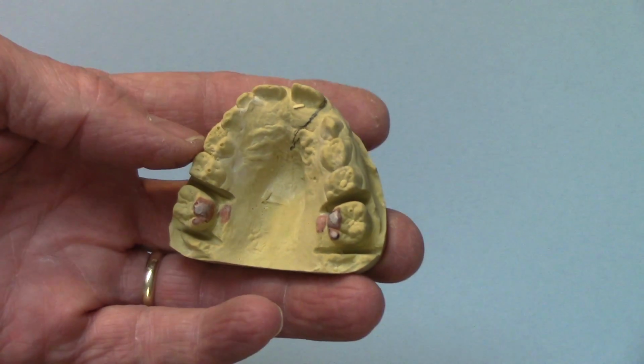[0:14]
Hi, I'm Jay Tyler. In this video, I'm going to show you what we did to eliminate spring breakage.
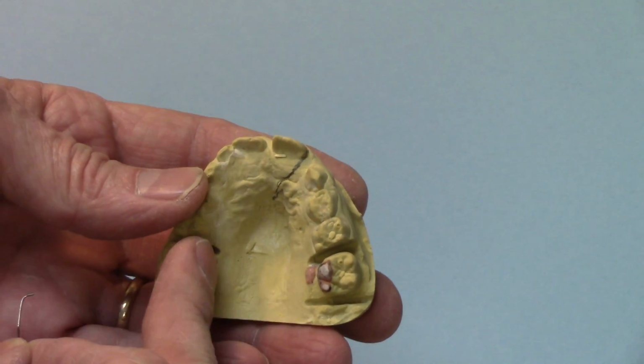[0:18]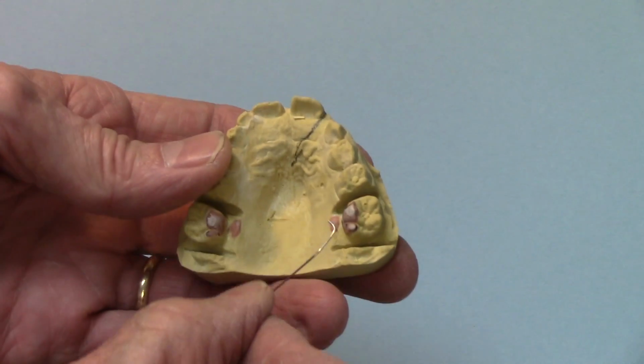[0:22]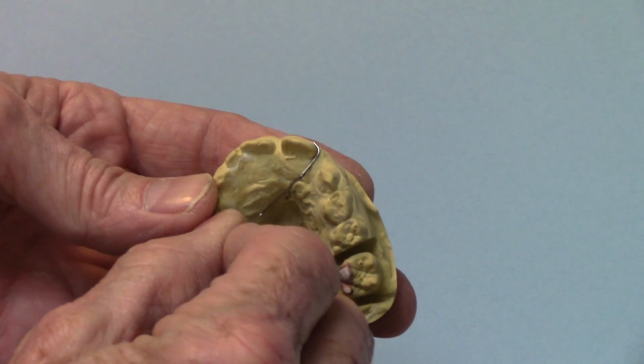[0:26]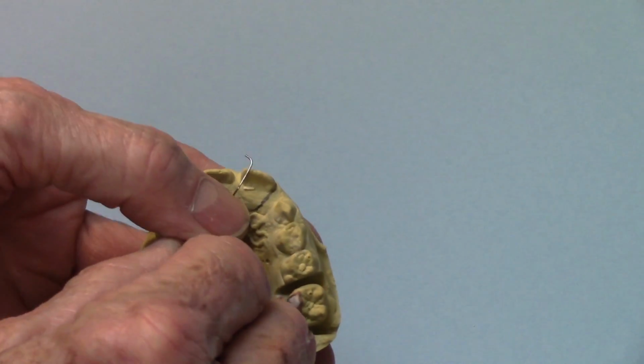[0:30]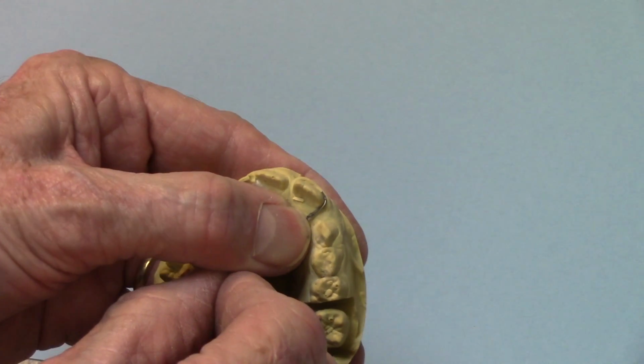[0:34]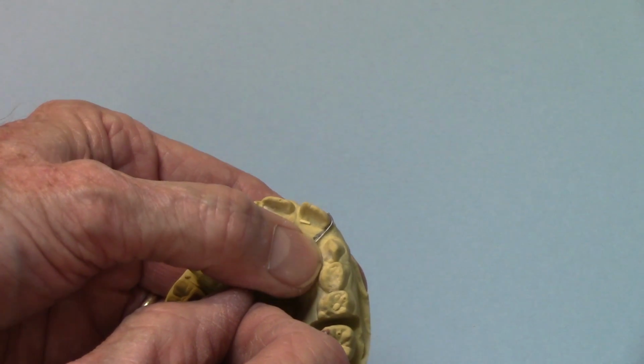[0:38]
Here's a model that's going to have an appliance with a spring to kick that central over more toward the midline. Now here's one version of a spring design. It's just simply a wire. This is an 0.020 wire, wraps around the distal aspect. And it would be waxed up to about right here, so that would be the working part of it. The rest of it would either be in acrylic or soldered to a fixed appliance.
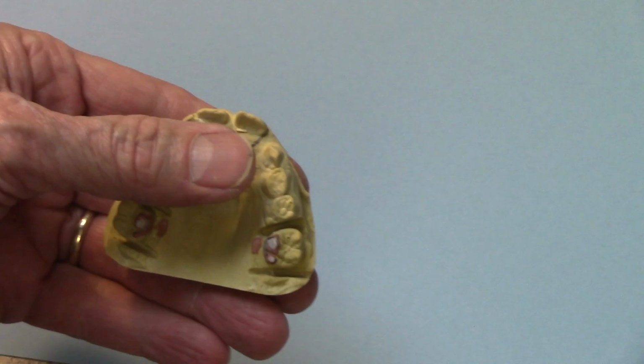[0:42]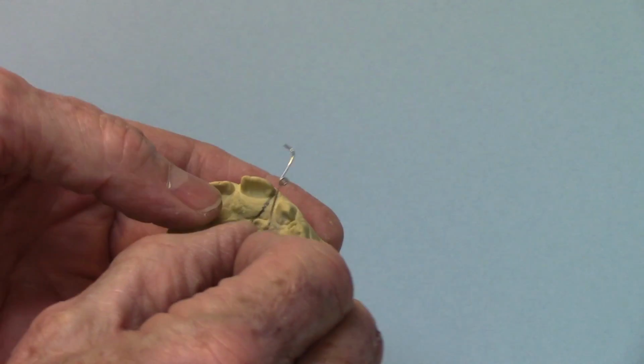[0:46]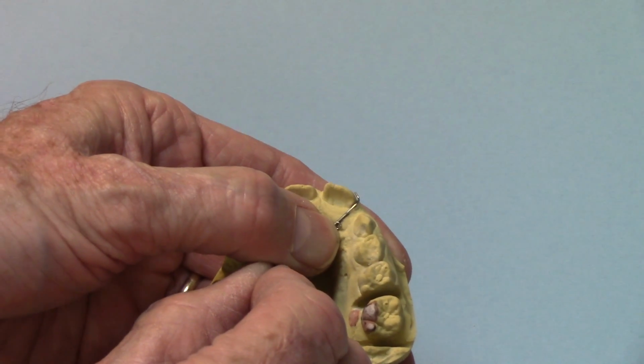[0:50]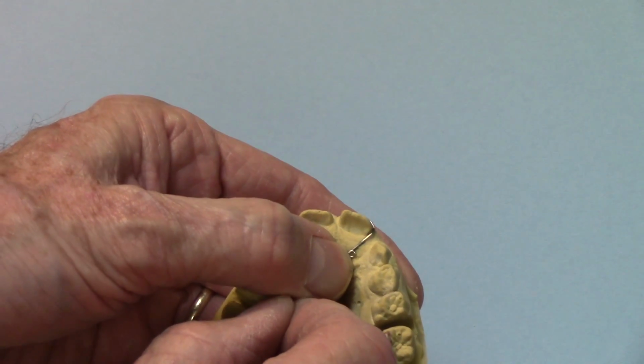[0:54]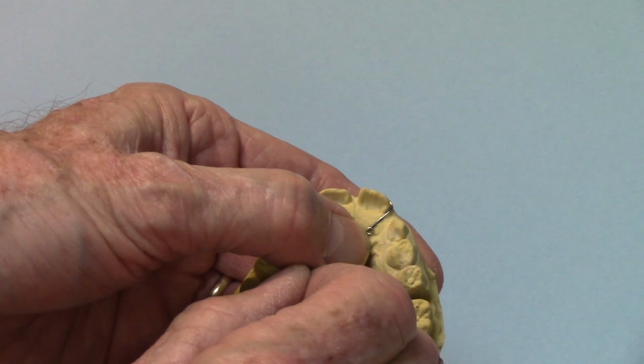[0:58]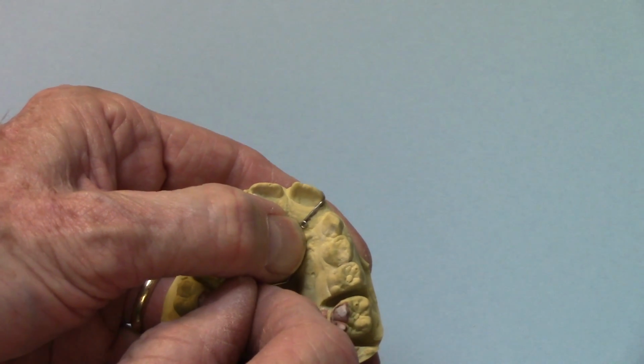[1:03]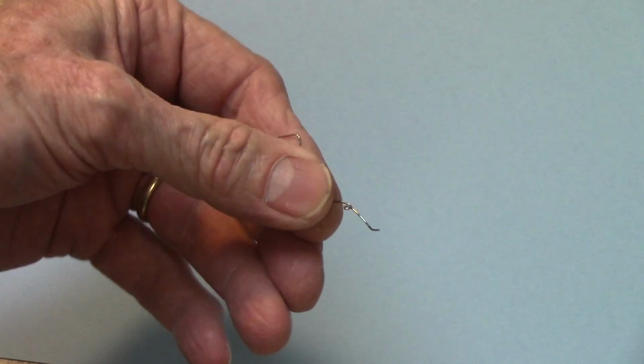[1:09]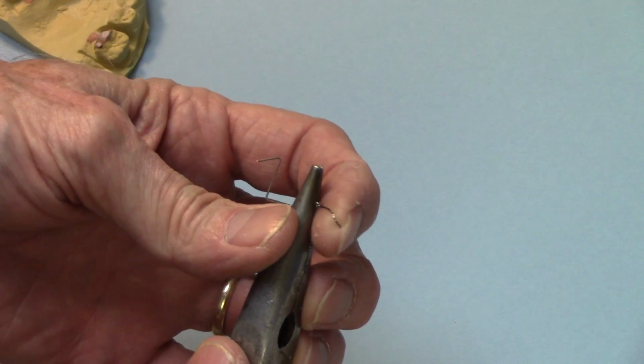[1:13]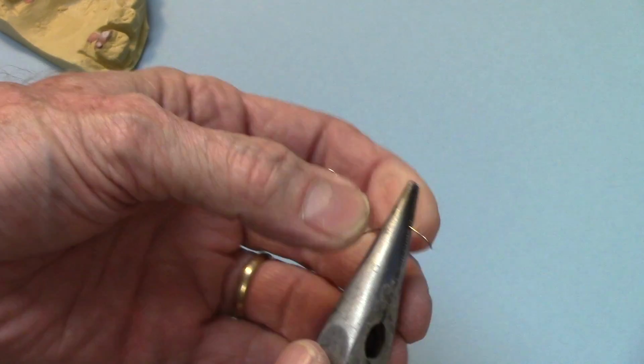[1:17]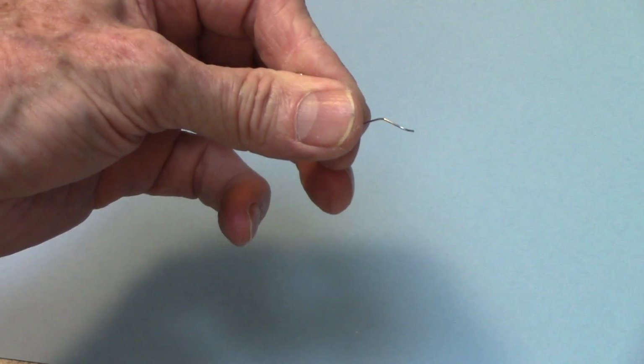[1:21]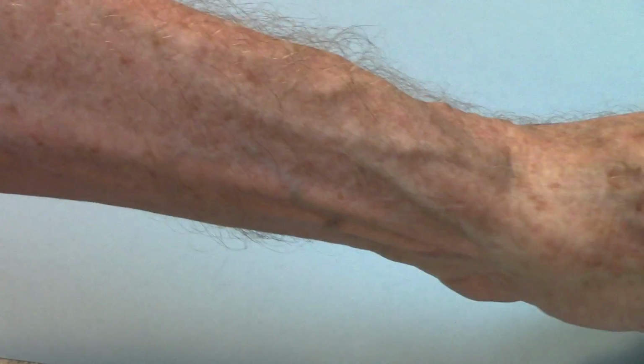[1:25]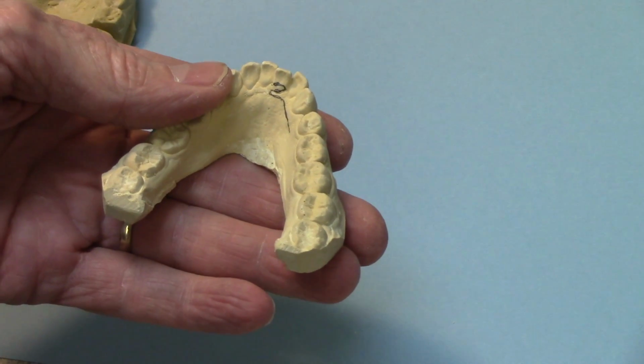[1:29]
But now, if we have a helix on it, we have the same design, and we would either put it into acrylic right past the helix and wax the helix and the active part of the spring, or put the heat protective compound on there and solder it from the helix back, and we would have a single helix spring, and it's got more resiliency. You can grab it with a plier, and you can just see it's got a lot of spring to it. Well, this spring has a lot of spring to it as well, but these springs break. These springs don't.
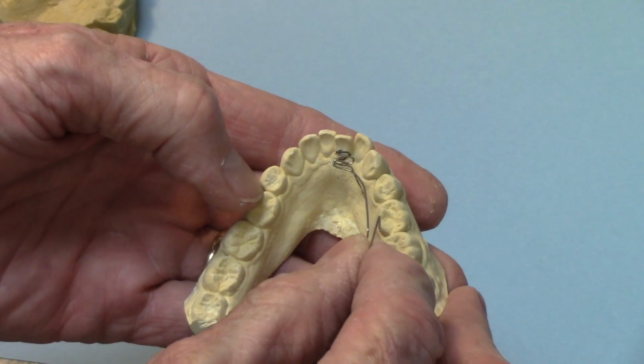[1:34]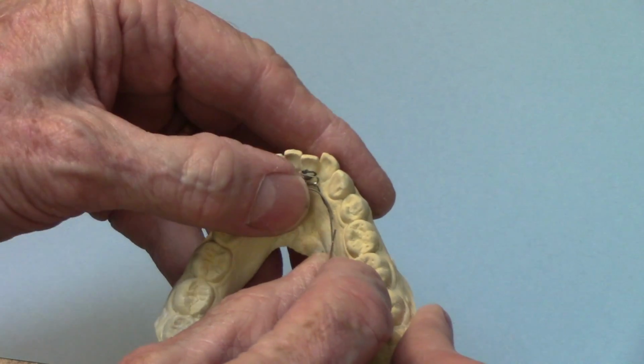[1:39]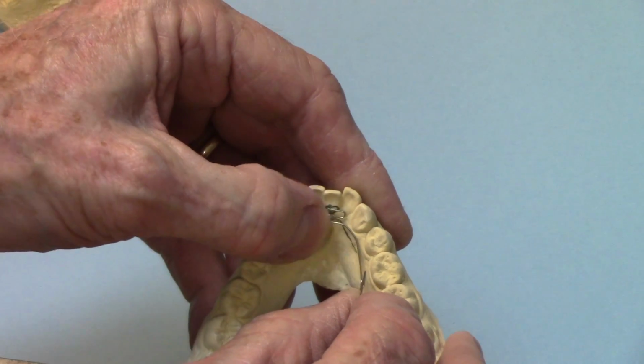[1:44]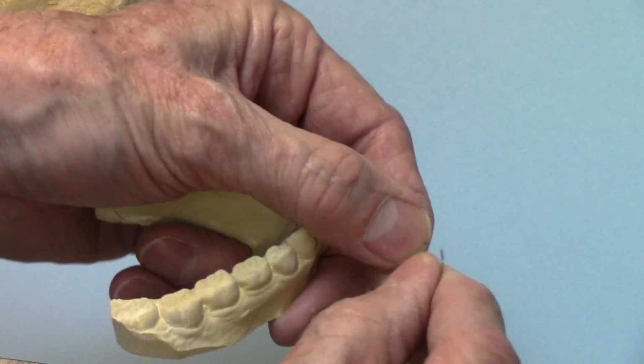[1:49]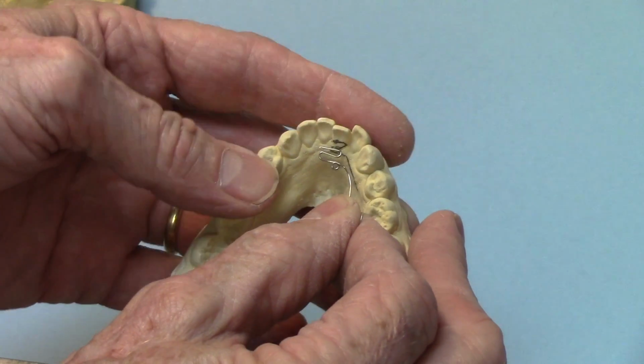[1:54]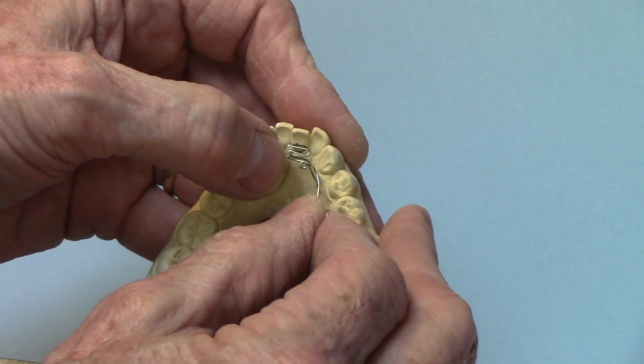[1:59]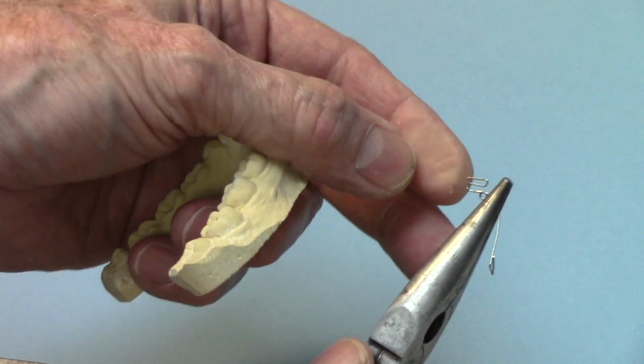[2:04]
Okay, here's another model, another kind of spring. We could have just a regular finger spring, an S spring, Z spring, whatever you want to call it, that would push that incisor out. And there again, we'd have it waxed up to about right here, and then it would be free from there on into the acrylic, or soldered if it's a soldered appliance. But why don't we instead have the same spring, but put a helix in it, right where it goes into the acrylic. So we would wax it right up to there, and then that part would go into the acrylic, and it would have that same spring action, a little more resiliency than otherwise.
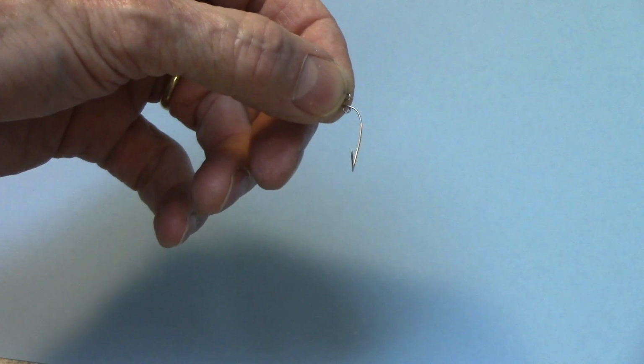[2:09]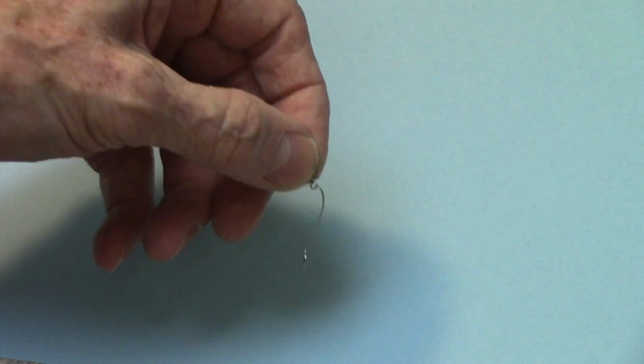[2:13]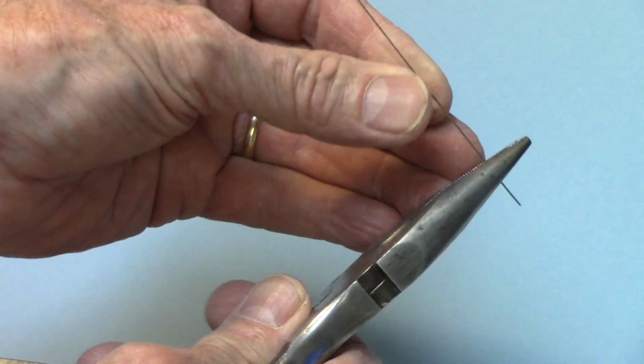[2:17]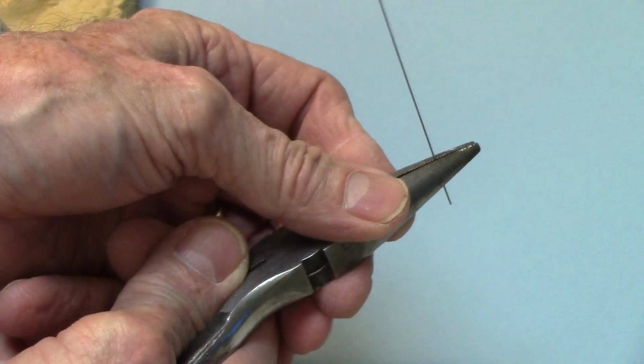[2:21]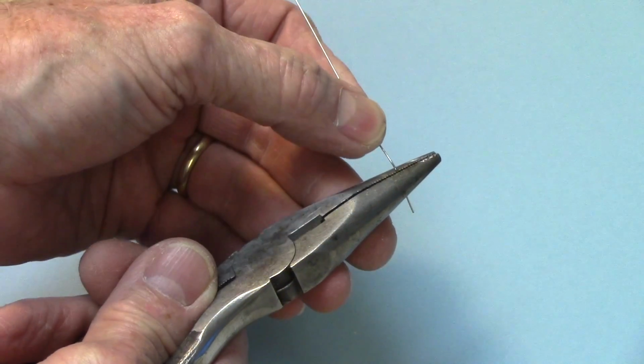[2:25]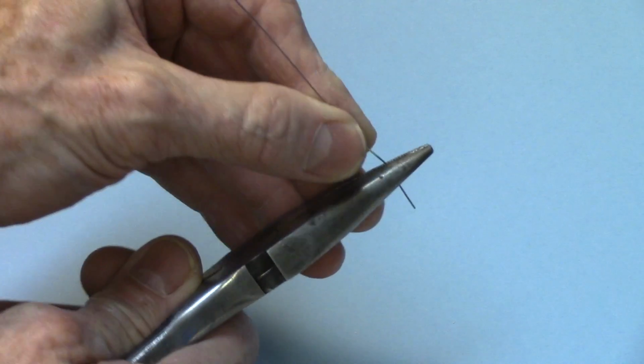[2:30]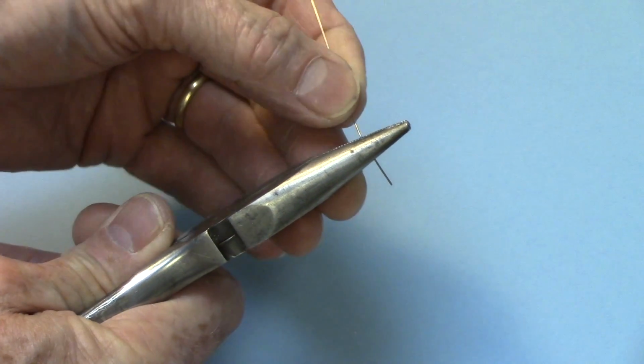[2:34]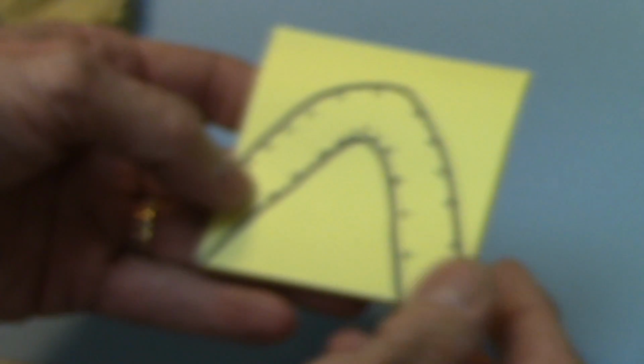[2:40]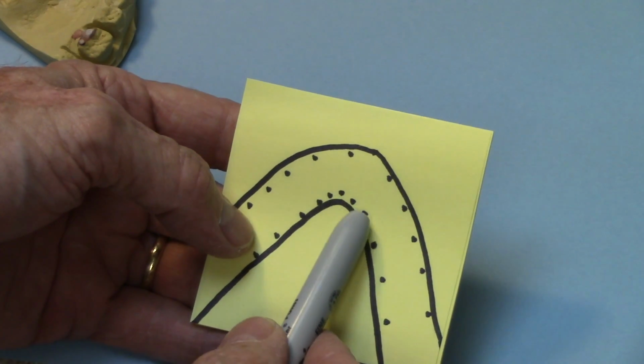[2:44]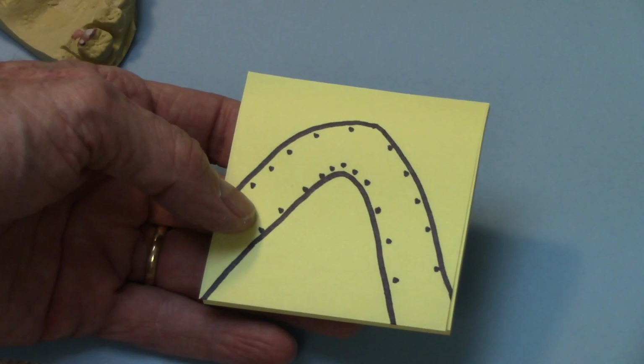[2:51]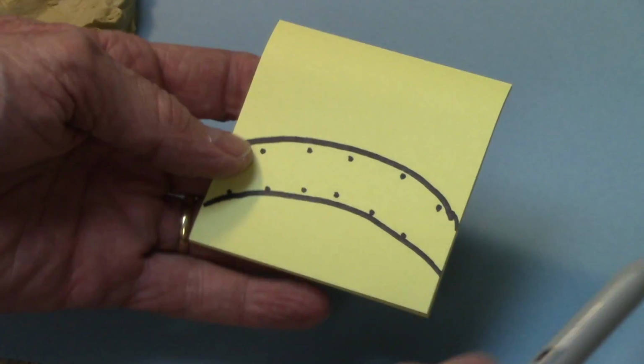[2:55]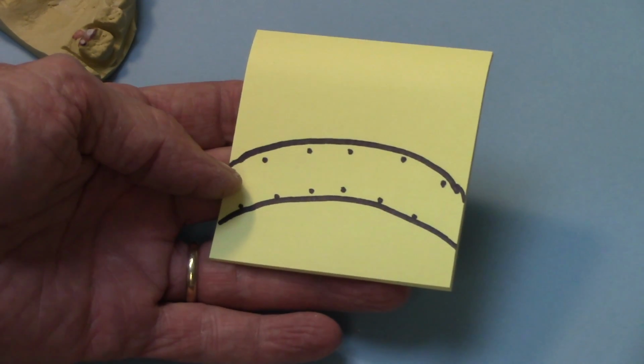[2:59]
Now, what happens there? What goes on? Well, when you have a wire here, and it goes into acrylic, like let's say that pliers are the acrylic, and the wire is sticking out of it, and it's going to be a spring, and you bend it to activate the spring, it has some bend to it. So what it's doing is it's bending right in that one area where it's either soldered or comes out of the acrylic. And the grain structure within the wire is compressed on the inside and it's stretched on the outside. So if it's a hard bend and it goes back and forth enough times, it's going to break pretty easily. But if you were to have a longer wire like this, they're still going to be compressed on the inside and stretched on the outside, but it's not going to be quite as radical.
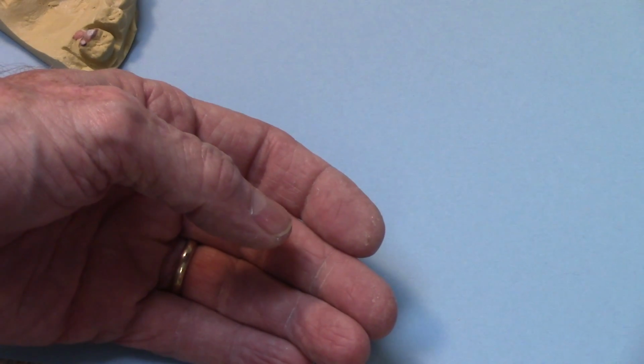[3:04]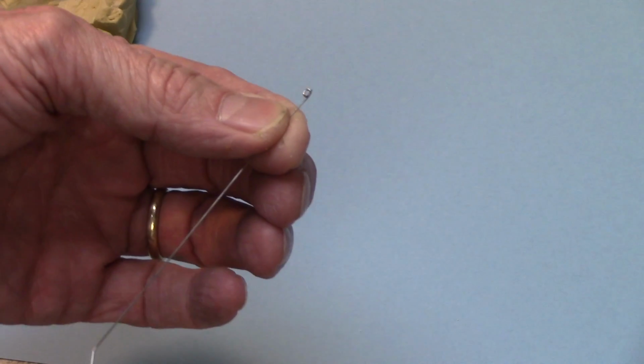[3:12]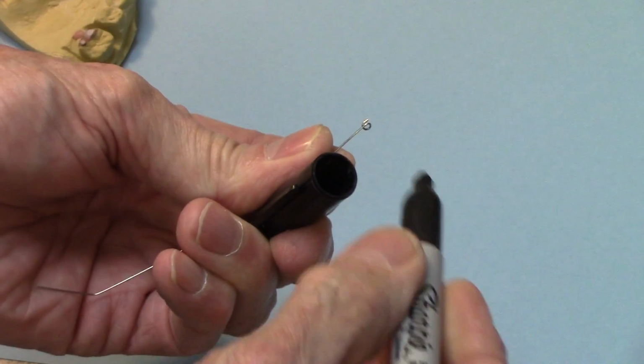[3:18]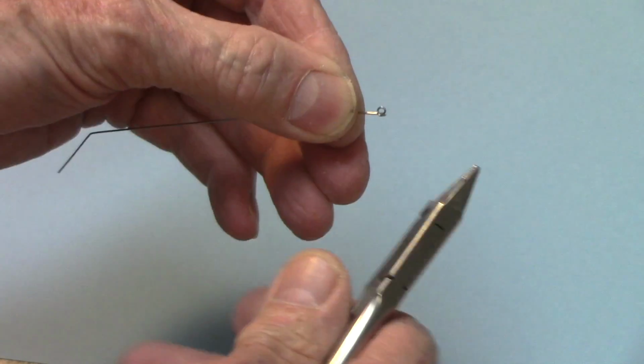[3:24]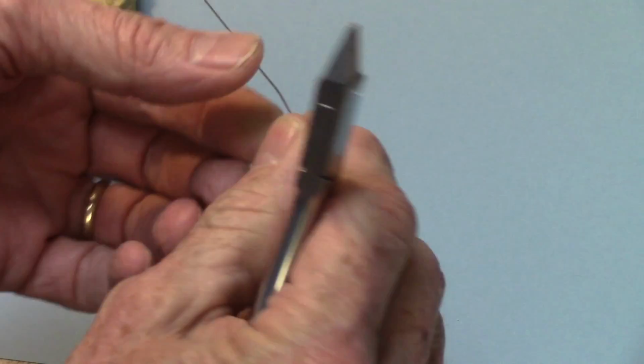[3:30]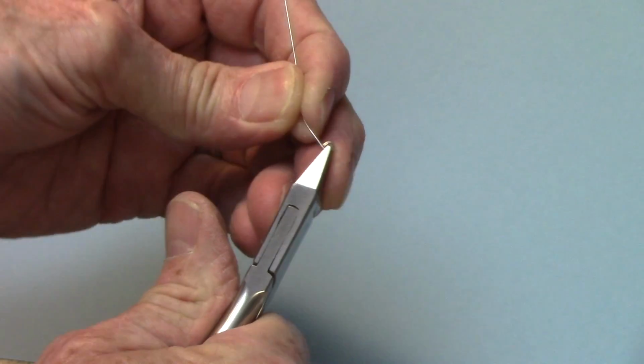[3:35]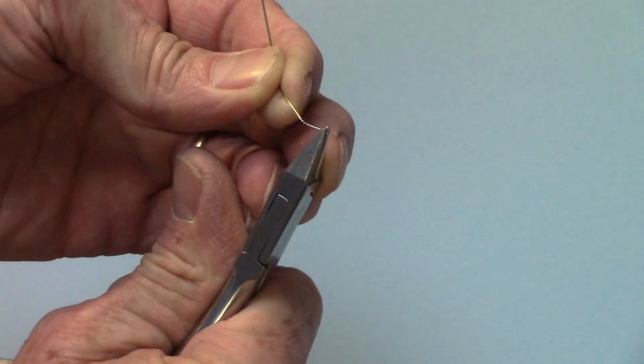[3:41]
So let me show you a spring here. I've got one here. This is a single helix that I wound, and I'm going to put a mark on it right at the helix with a marker there. And then let's unwind it and just see how much wire we're talking about here. Let me get my plier in there. Okay, just going to unwind it, and kind of straighten it out as best I can.
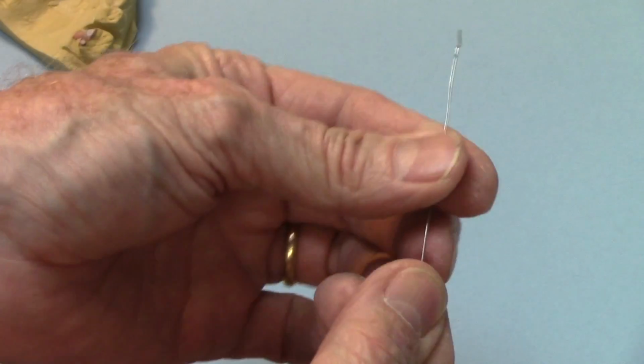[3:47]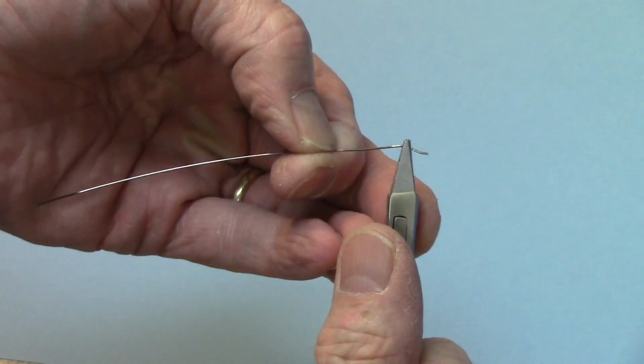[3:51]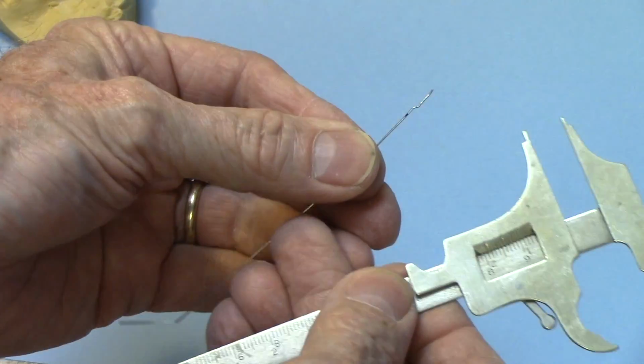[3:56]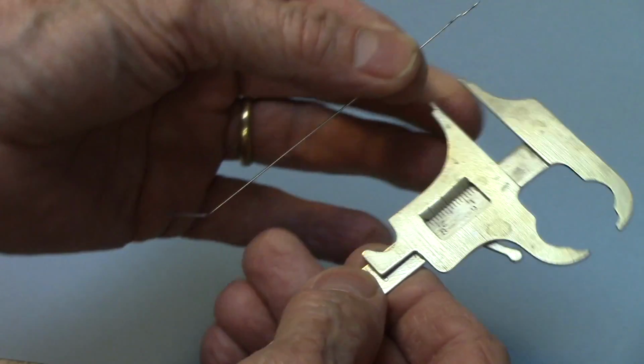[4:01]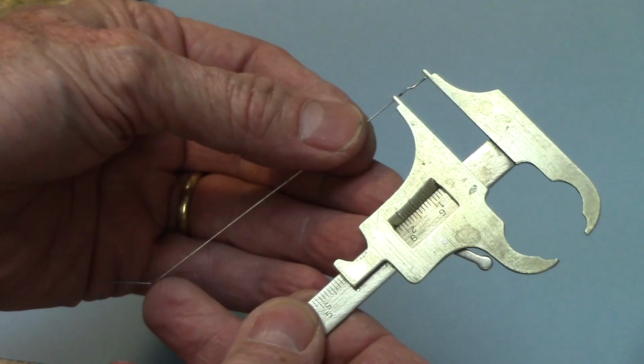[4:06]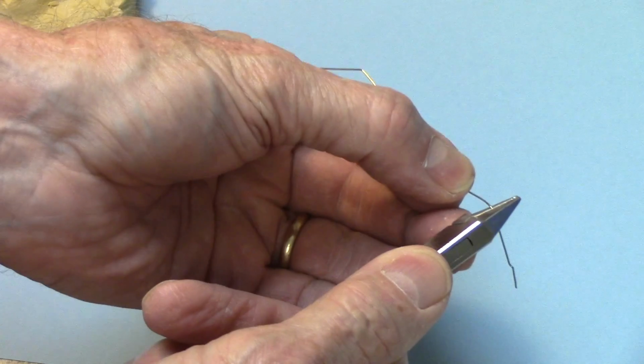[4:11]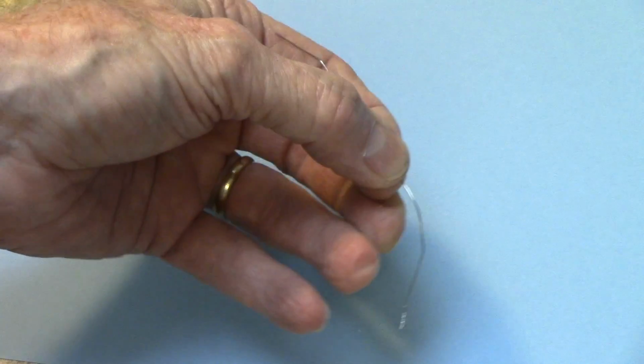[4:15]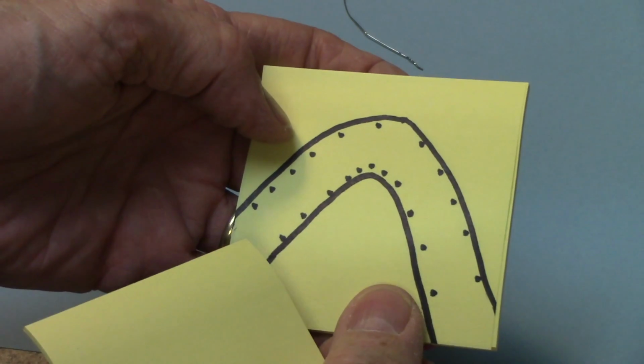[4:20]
And now let's measure it down to where the mark was with a Boley gauge. It's not very straight. Kind of hard to straighten out a wire. Okay, you can see the mark and you can see the end of the wire. And I'm going to measure it. And look at that. That is 10 millimeters. So instead of it being bent right in one little place, you've got like 10 millimeters being distributed out evenly. So you've got more of this than you have that.
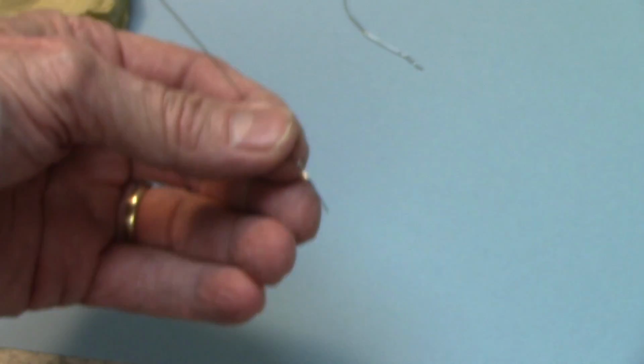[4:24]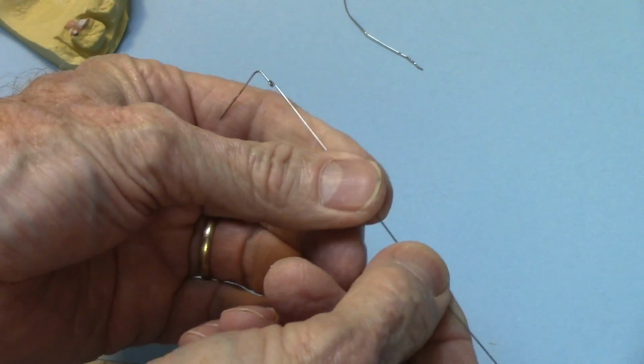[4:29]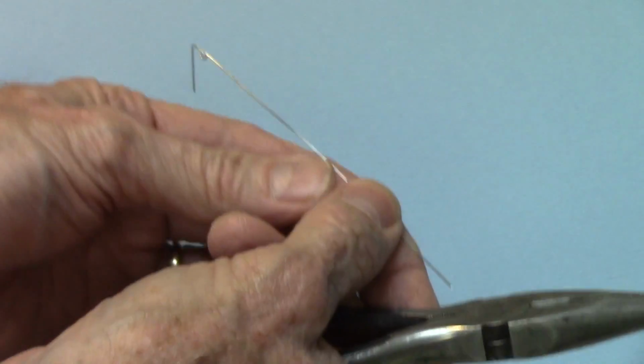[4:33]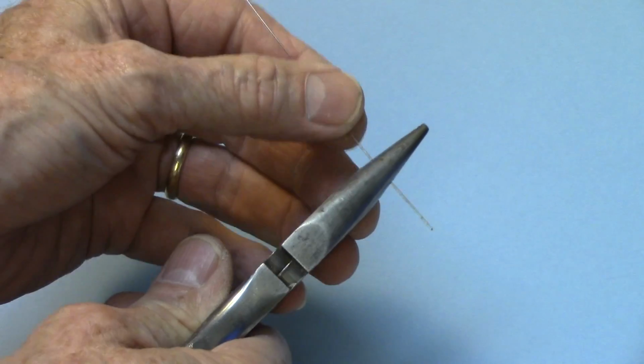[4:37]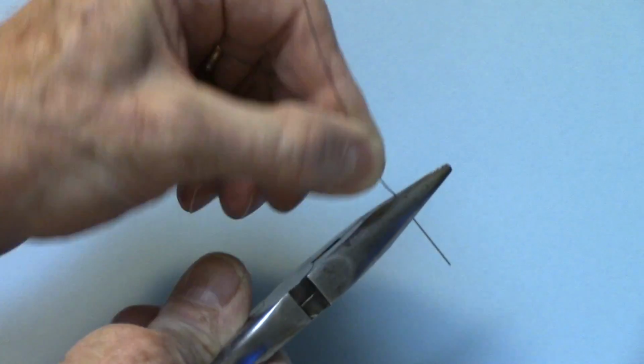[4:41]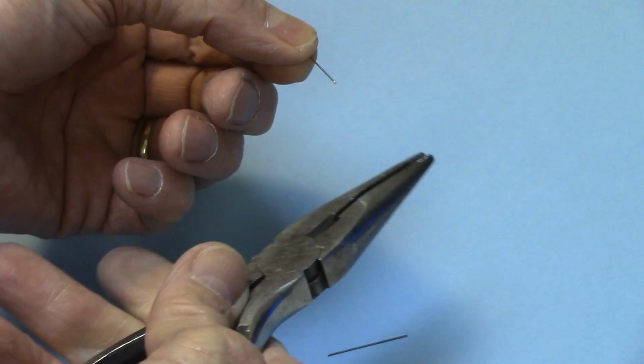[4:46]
Now, let's take a wire that's got a helix in it already, and on the other end, it doesn't have a helix. I'm using the same wire for this, so you don't think I'm doing some kind of hocus pocus with different wires. I'm going to hold it in just a utility plier, and I'm going to bend this back and forth a few times. Now, see, it breaks pretty quickly.
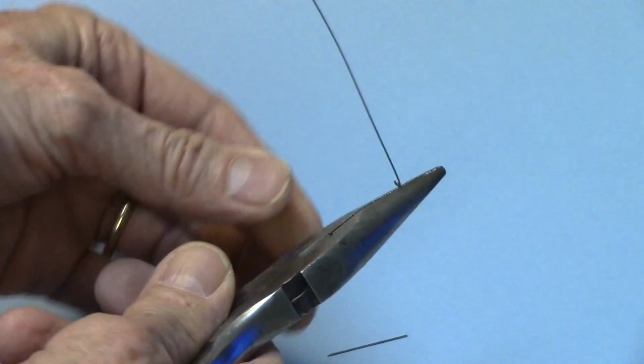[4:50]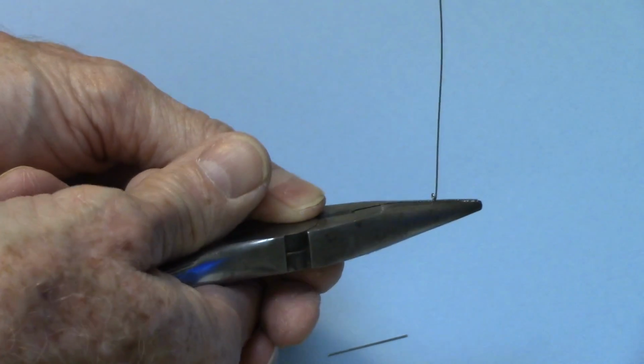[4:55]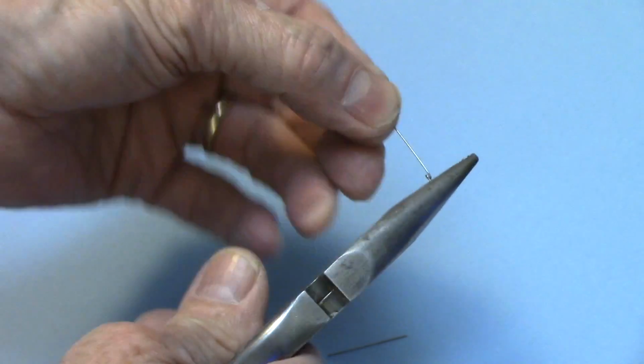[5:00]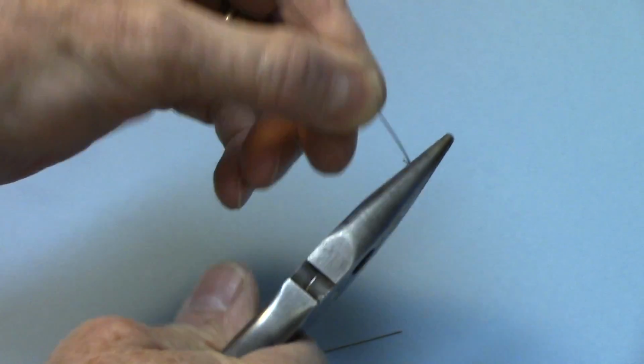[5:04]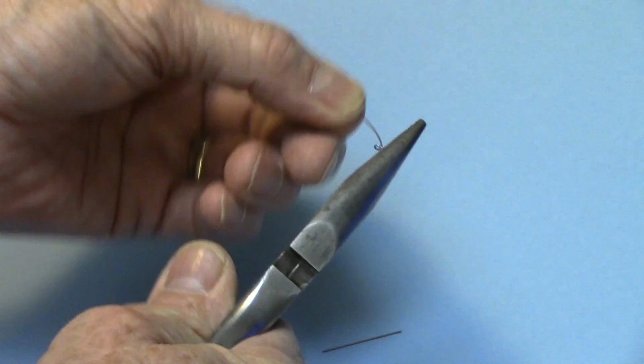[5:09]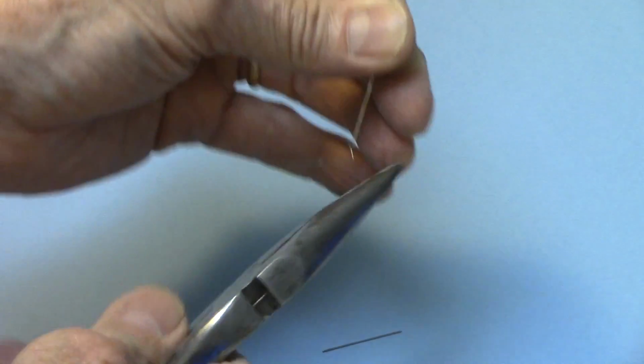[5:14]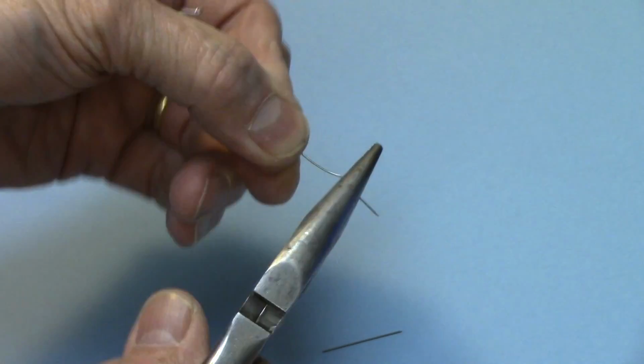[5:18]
So now, that's more stress than you would have with a spring, granted, but still, you see my point, it's under stress. Now, let's do the same thing with this, and I'm going to hold it right at the helix where it would be soldered or where it's coming out of the acrylic, and then let's just bend it and see how many times it takes for it to break. Okay, let's go back over here and see. Well, it breaks in just a few times.
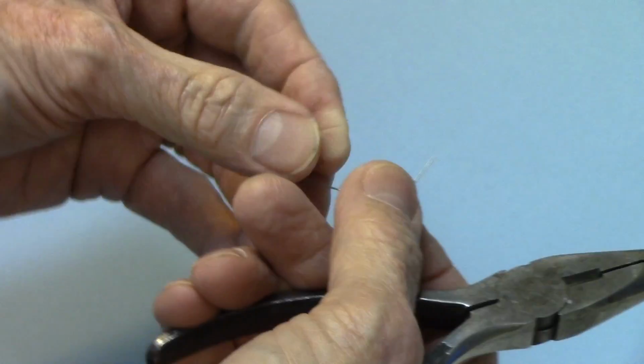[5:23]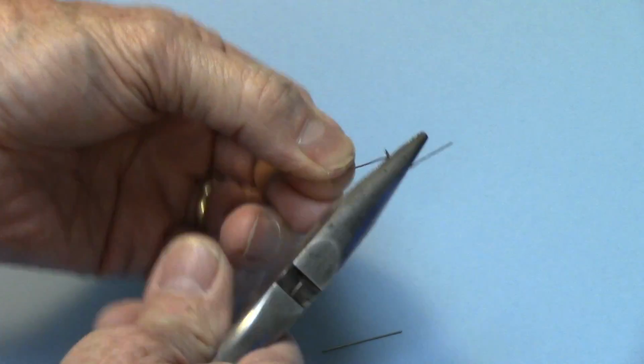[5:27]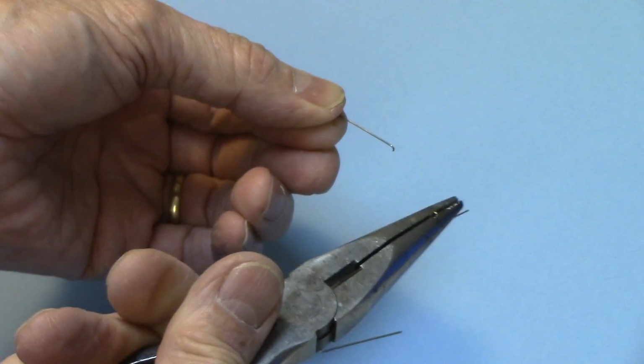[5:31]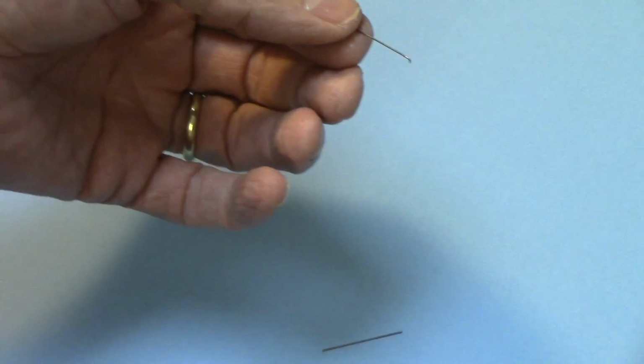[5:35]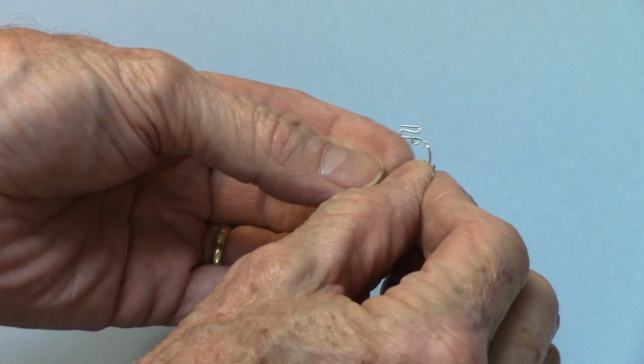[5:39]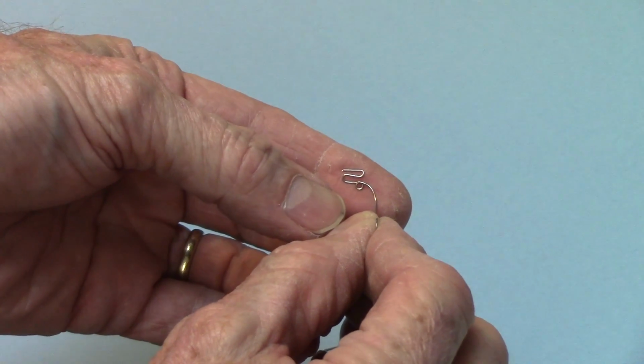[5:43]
Let's go back over here. Give it some more. And eventually it does break. But you see, you get a lot more bends, a lot more durability out of a spring that's got a helix in it than one that doesn't. So very simply, how we eliminated spring breakage is we just simply put a helix in it anytime we could.